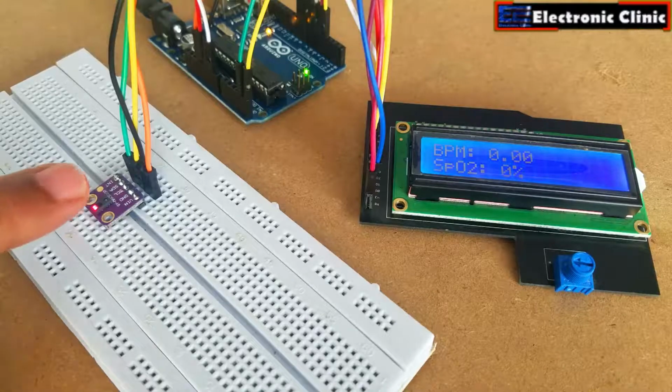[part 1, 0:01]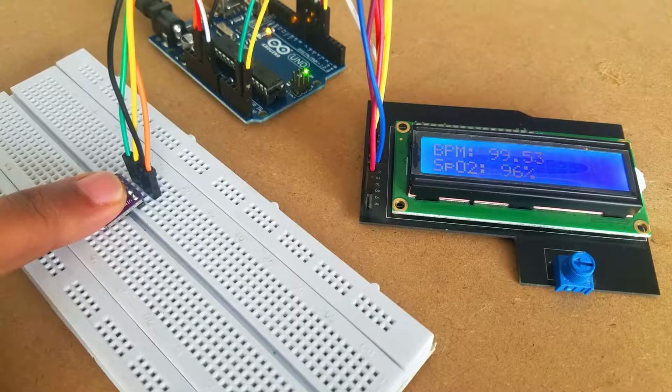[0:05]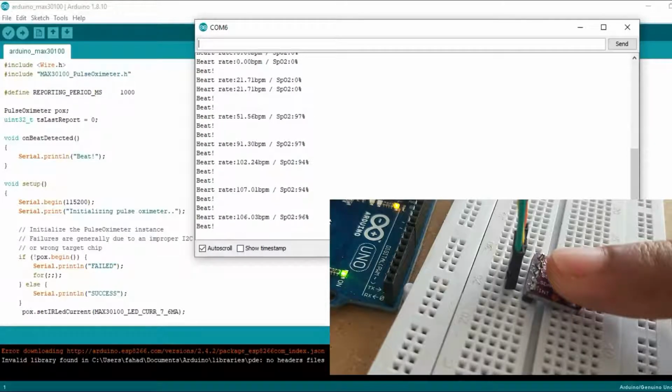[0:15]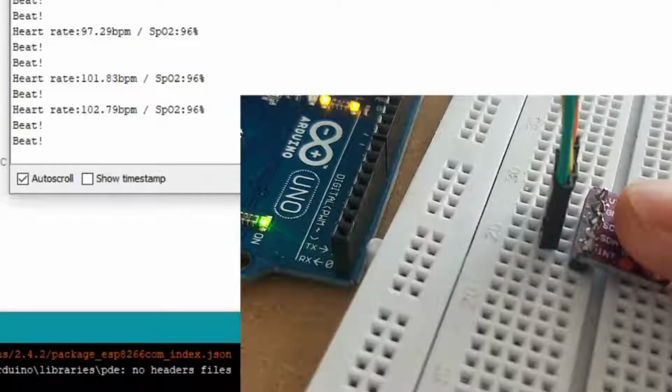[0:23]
In this tutorial, you will learn how to use the MAX30100 Pulse Oximeter with Arduino and display the heart rate and blood oxygen on the 16x2 LCD. The heart rate, or pulse rate, or heartbeat, is measured in BPM, which is also known as beats per minute, while the blood oxygen concentration is measured in percentage.
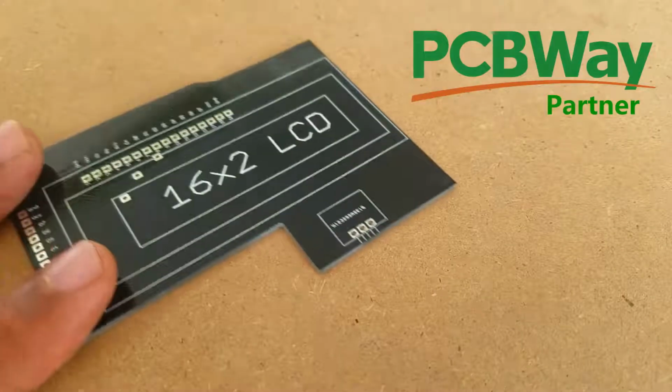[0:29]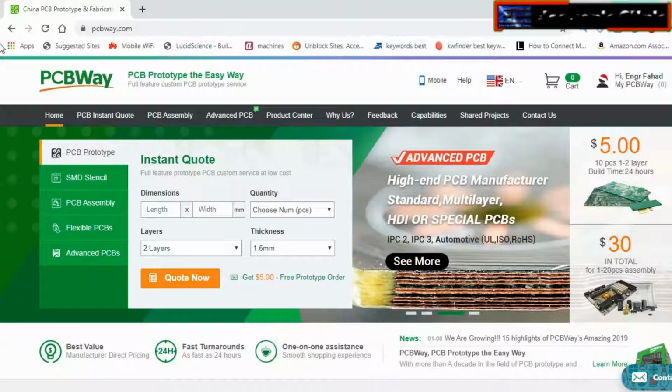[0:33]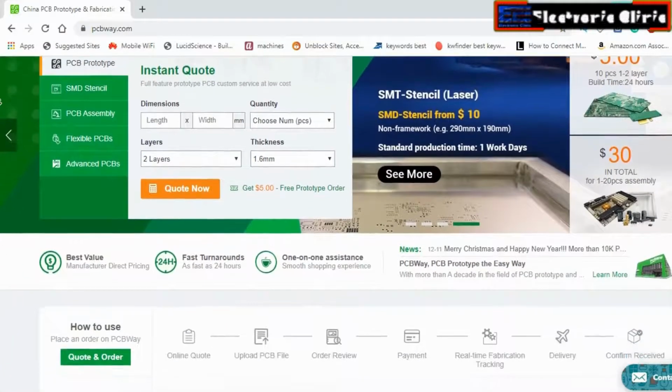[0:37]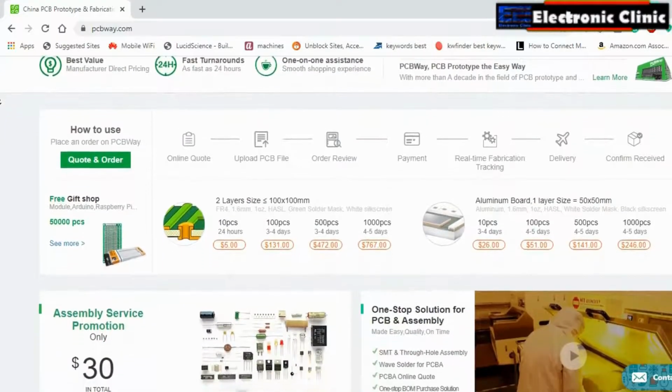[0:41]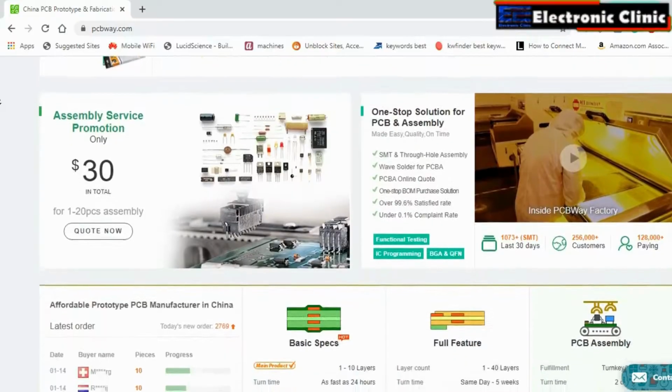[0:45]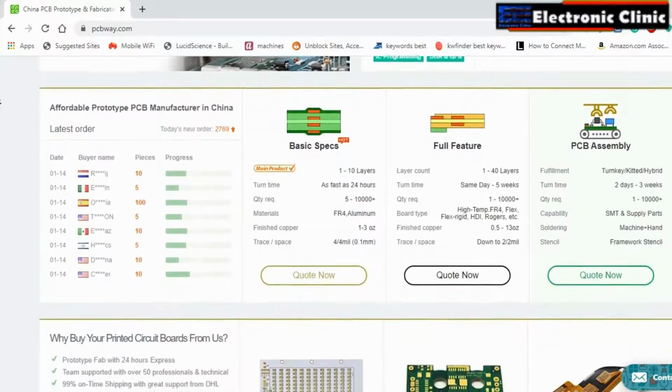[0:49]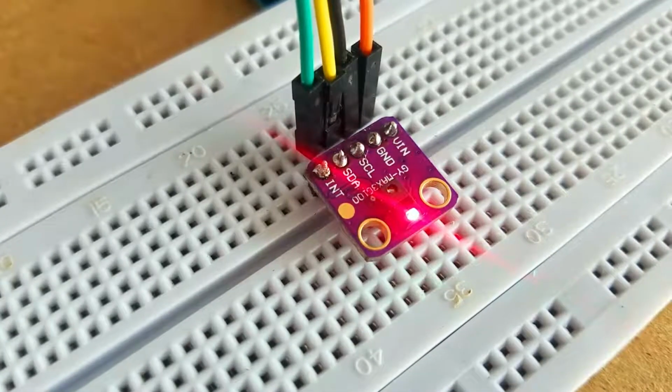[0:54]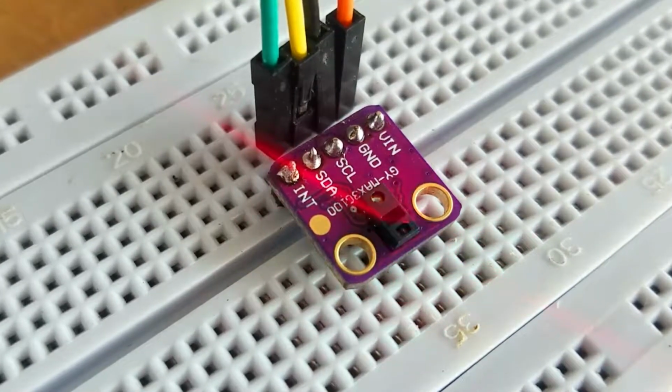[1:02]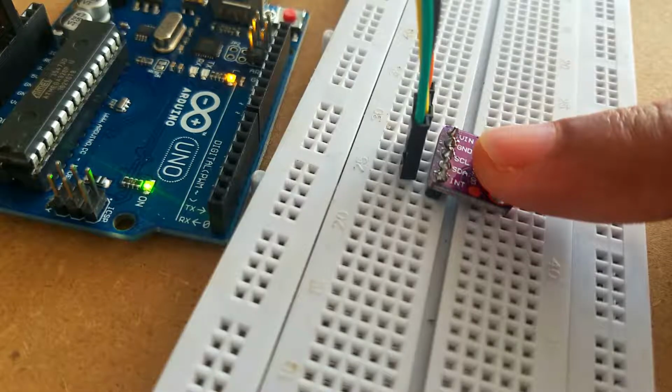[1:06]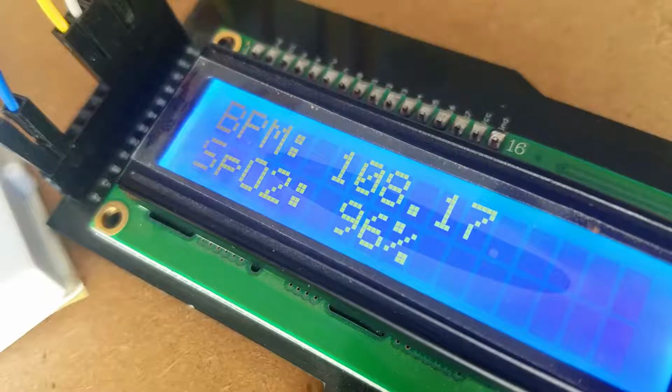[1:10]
So basically, the MAX30100 sensor is a pulse oximetry and heart rate monitor, which is used to check the health of a person with any condition that affects blood oxygen levels, such as heart attack, heart failure, lung cancer, asthma, etc.
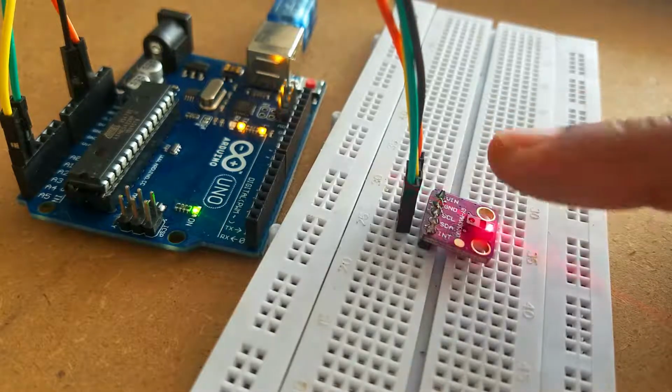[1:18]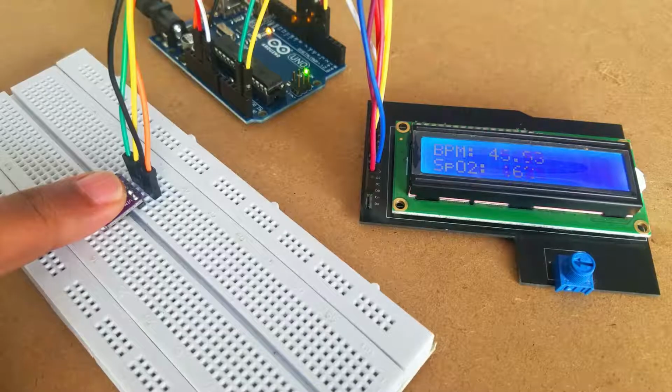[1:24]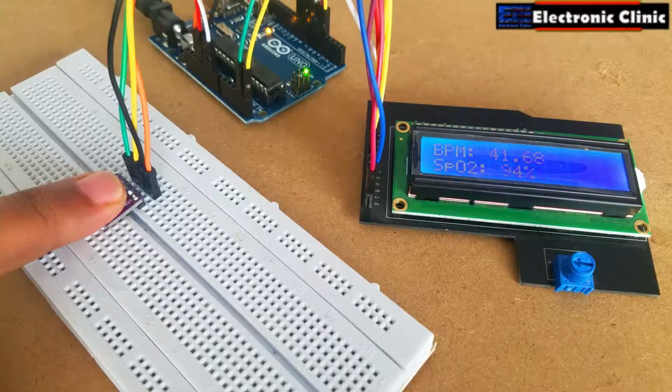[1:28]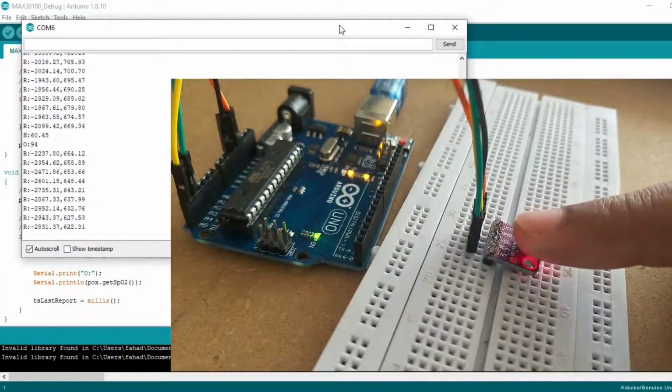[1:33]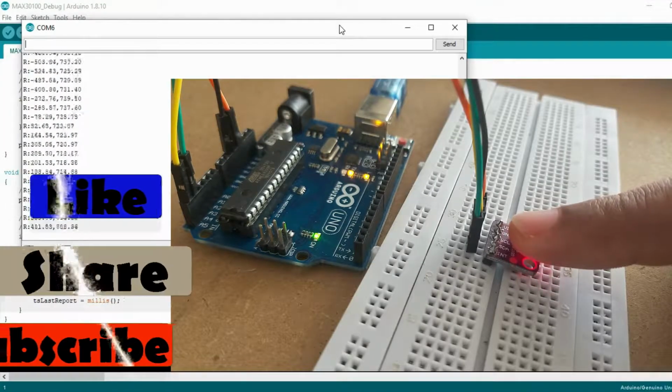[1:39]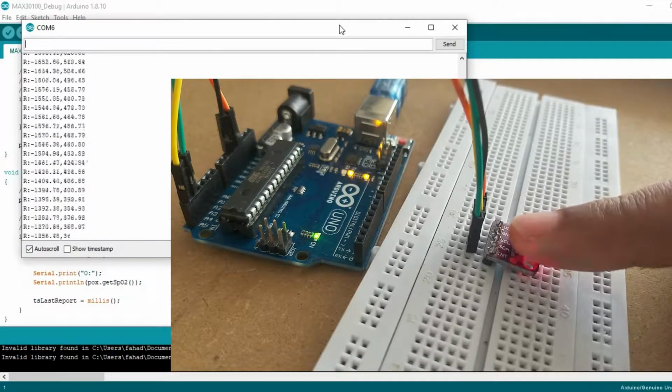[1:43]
No doubt the MAX30100 pulse oximeter is an amazing sensor. Still, it has some disadvantages. It may generate incorrect readings if the finger is not properly placed. The ambient light falling on the sensor can affect the final reading. While using the MAX30100 oximeter, make sure your finger is not moving, because it can result in an incorrect reading.
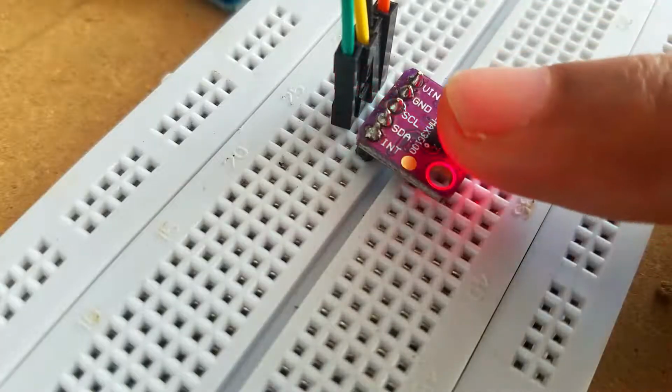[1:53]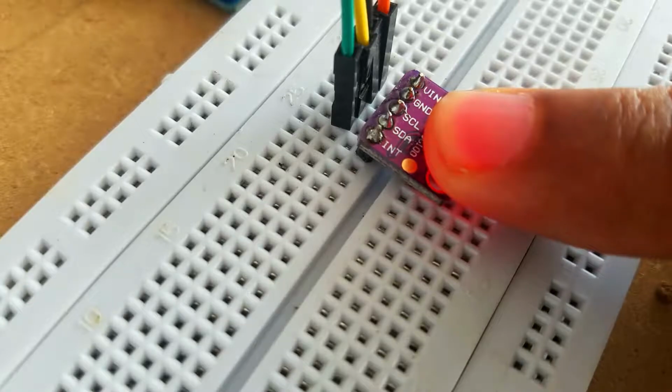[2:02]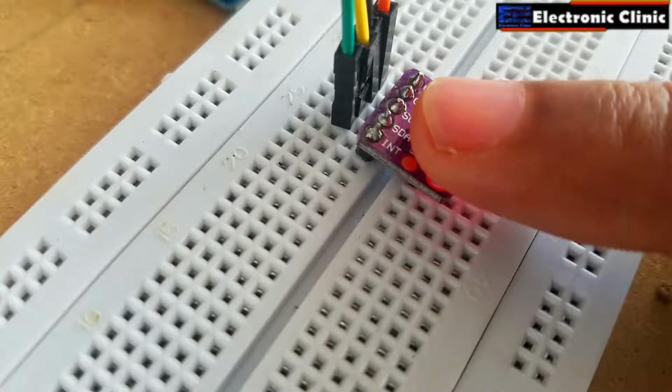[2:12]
One more thing that you really need to take care of while using the MAX30100 sensor is that you should never press the sensor too hard, as this affects the blood flow and as a result you will get incorrect readings. Try to place your finger softly and make sure your finger does not move. This way you can get the most accurate reading.
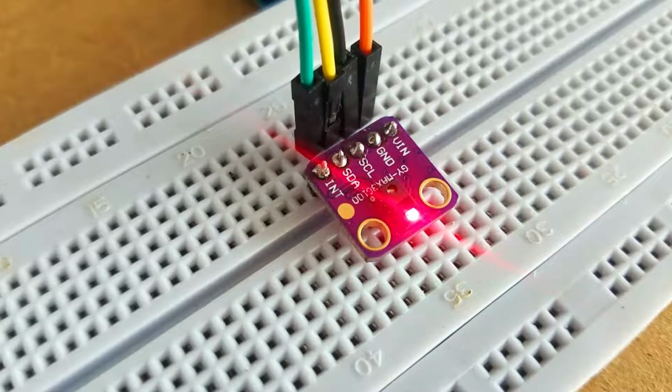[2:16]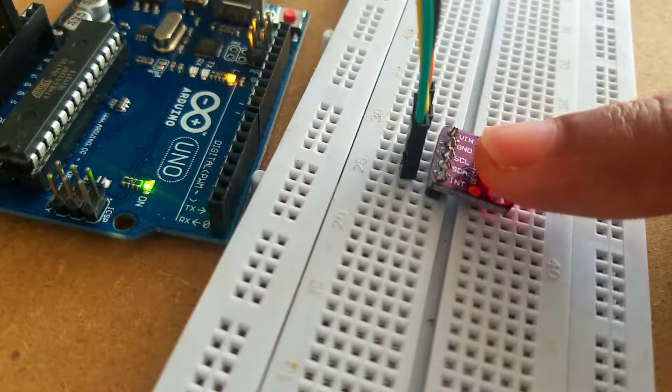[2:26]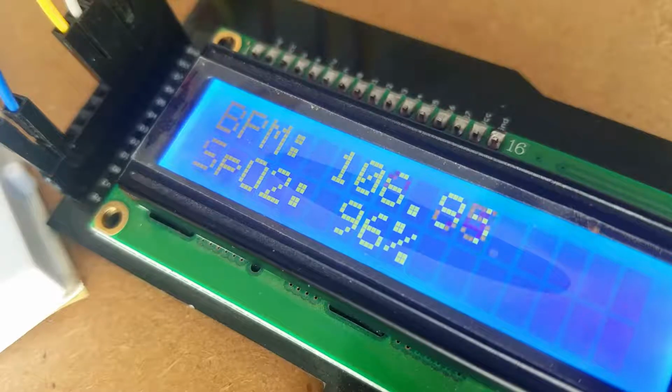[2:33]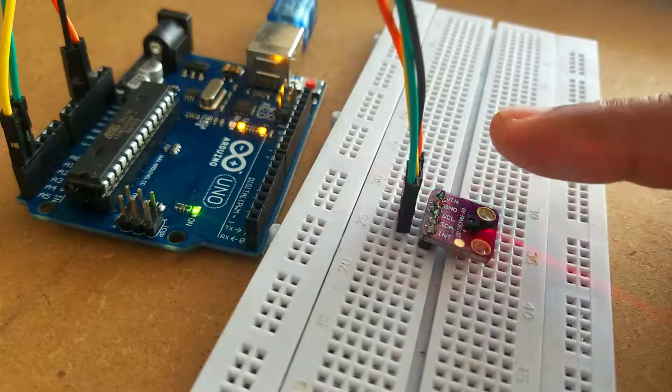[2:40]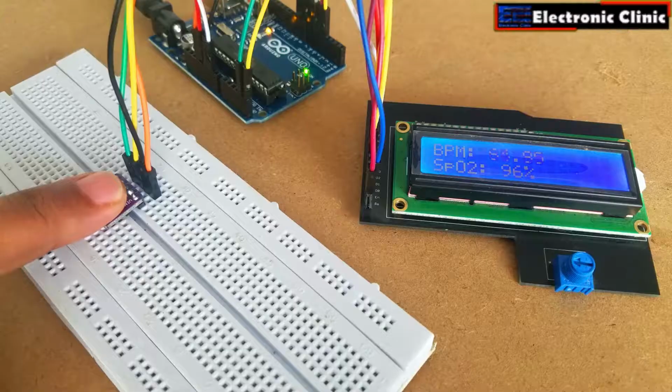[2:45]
This is my first getting started tutorial on the MAX30100 pulse oximeter, which covers the extreme basics, including number 1, MAX30100 pulse oximeter technical specification. Number 2, MAX30100 sensor pinout. Number 3, interfacing MAX30100 pulse oximeter sensor with Arduino. Number 4, programming. And finally, number 5, testing. Without any further delay, let's get started.
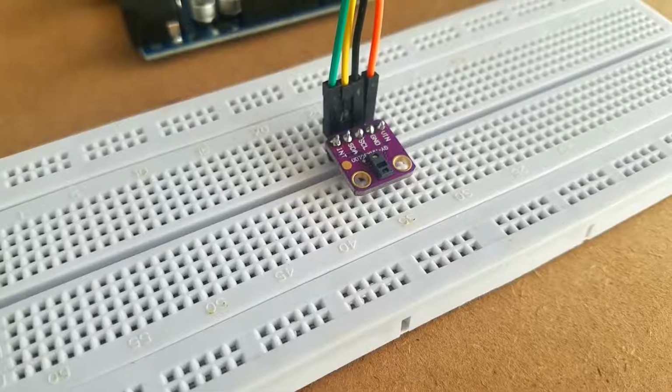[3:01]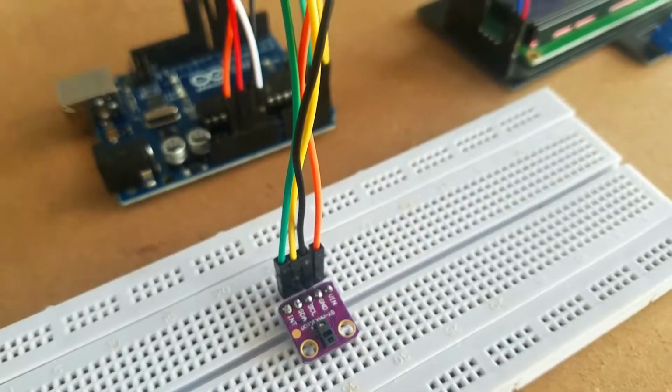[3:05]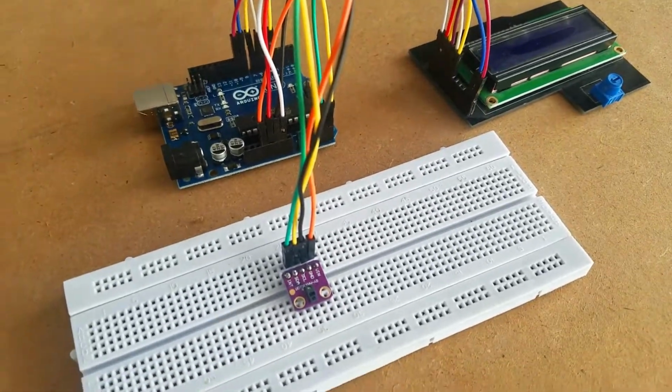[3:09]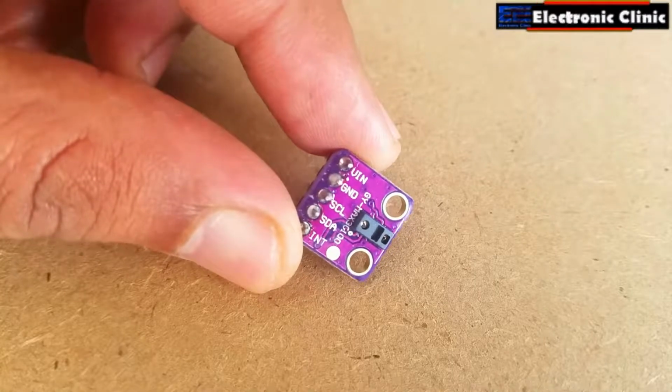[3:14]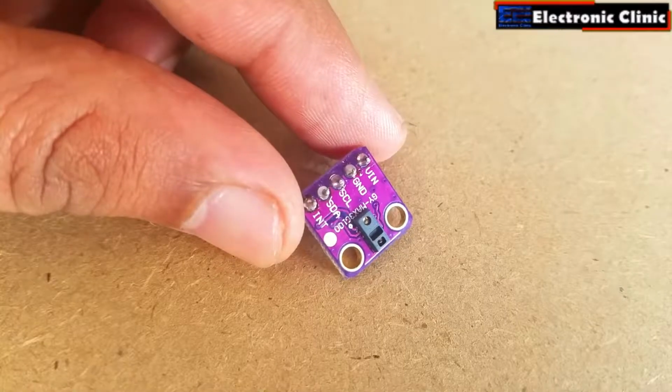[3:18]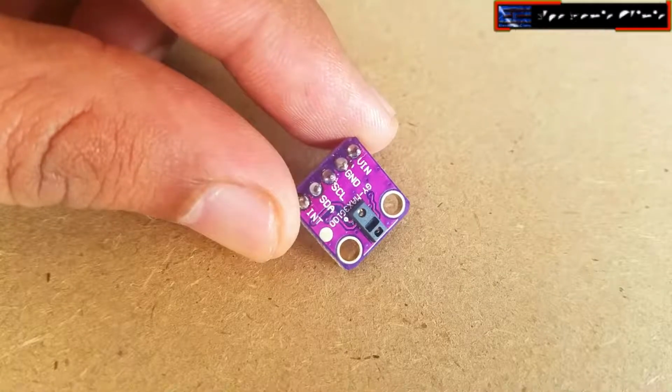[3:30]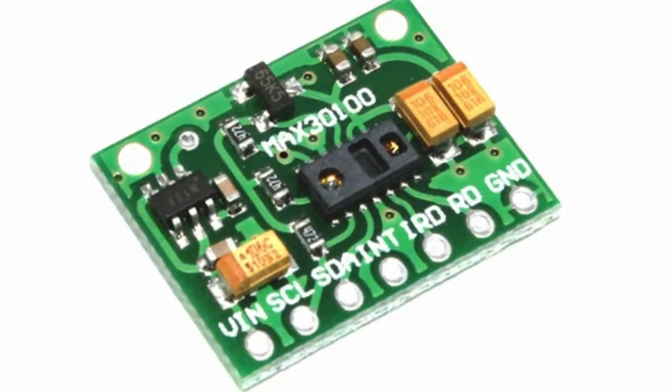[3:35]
The MAX30100 is an integrated pulse oximetry and heart rate monitor sensor solution. It combines two LEDs, a photodetector, optimized optics, and low noise analog signal processing to detect pulse oximetry and heart rate signals. There is another type of the MAX30100 pulse oximeter, as you can see on the screen.
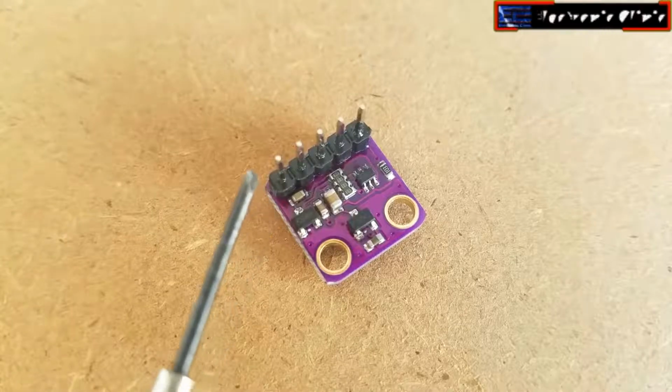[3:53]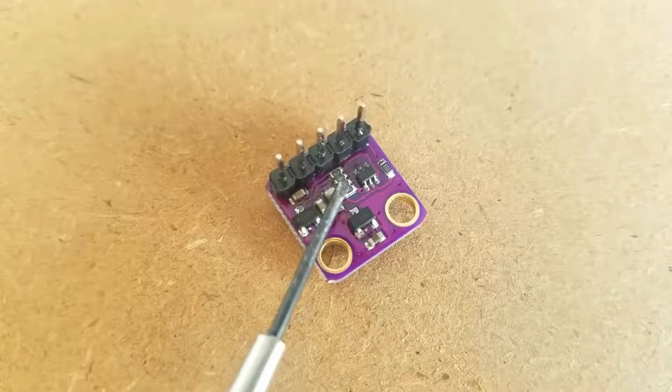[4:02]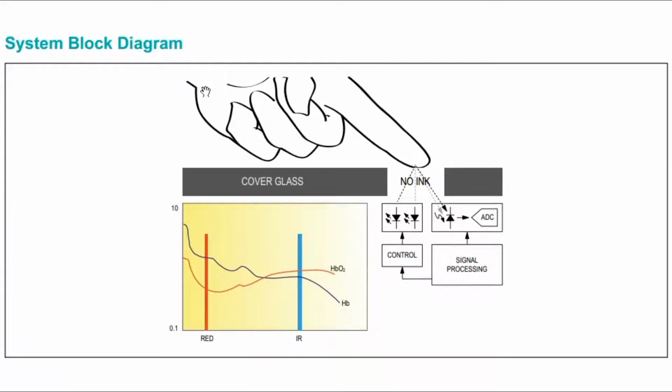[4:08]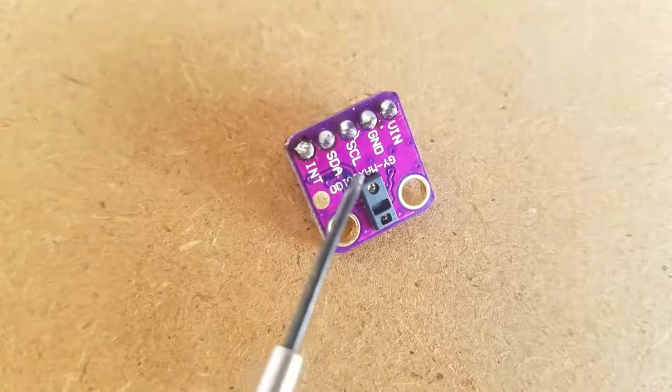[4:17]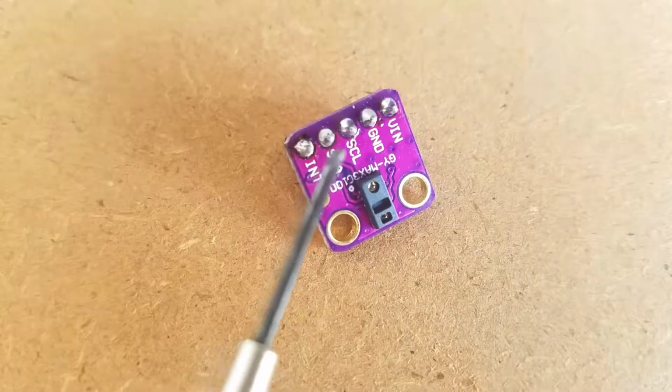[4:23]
This type of the oximeter has the sensors and electronic components all on the same side. Moreover, there are many complaints about this type of the sensor. I recommend you purchase the one I'm using in this video, because while using this sensor, you don't need to remove the resistors or solder any extra wires. As per the system block diagram, which is available in the datasheet, it clearly shows that there should be a small distance between the sensor and finger. The MAX30100 operates from 1.8 volt and 3.3 volt power supplies.
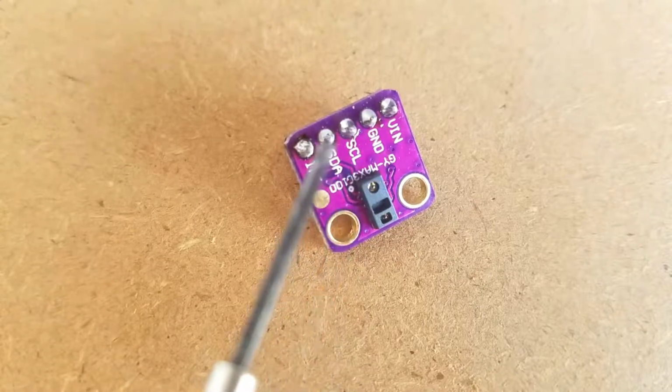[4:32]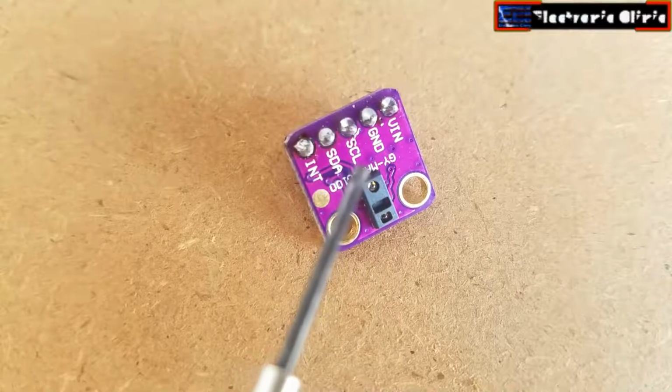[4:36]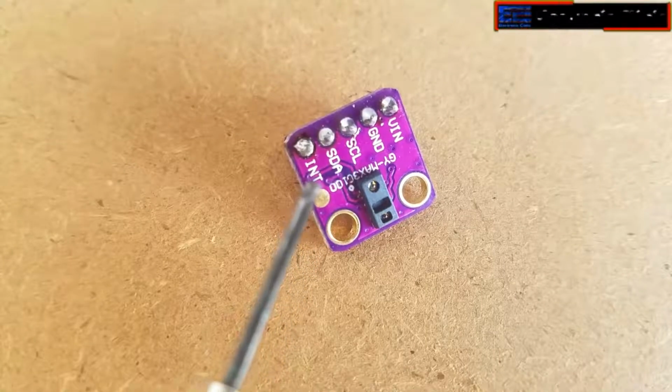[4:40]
As you can see clearly, the MAX30100 pulse oximeter has a total of 5 male headers, which are clearly labeled as VIN, ground, SCL, SDA and INT. This is an I2C supported sensor and communicates with the Arduino board through the I2C communication bus.
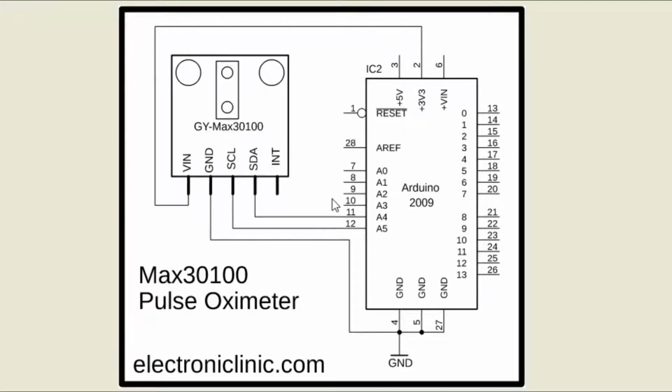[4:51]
First, let's start with a very basic circuit diagram. As you can see, the VIN and ground pins of the MAX30100 sensor are connected with the Arduino's 3.3 volt and ground pins. The SCL pin is connected with the analog pin A5. The SDA pin is connected with the analog pin A4, while the INT pin is not connected.
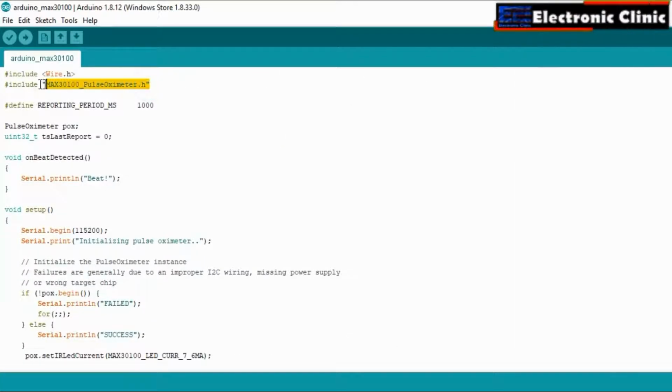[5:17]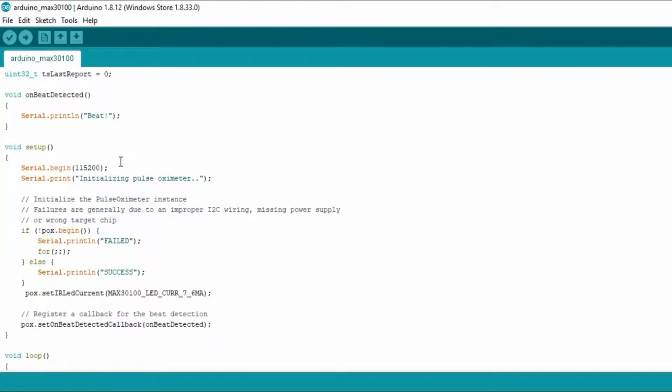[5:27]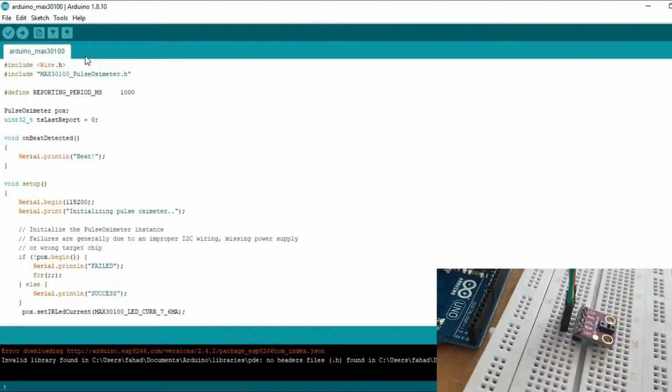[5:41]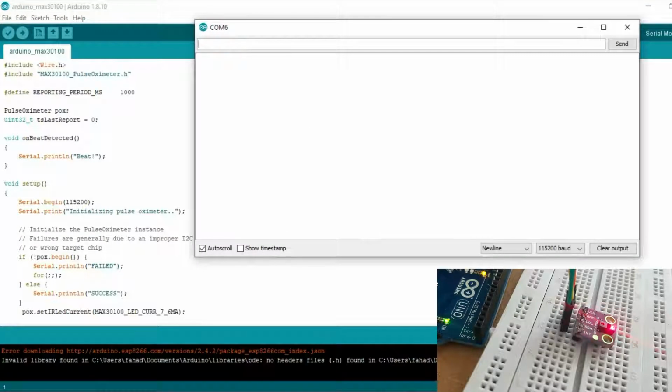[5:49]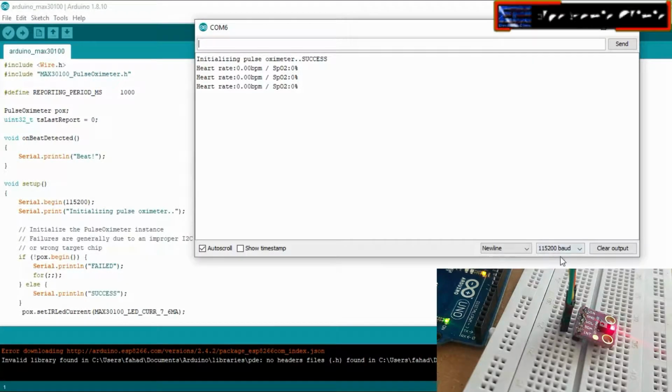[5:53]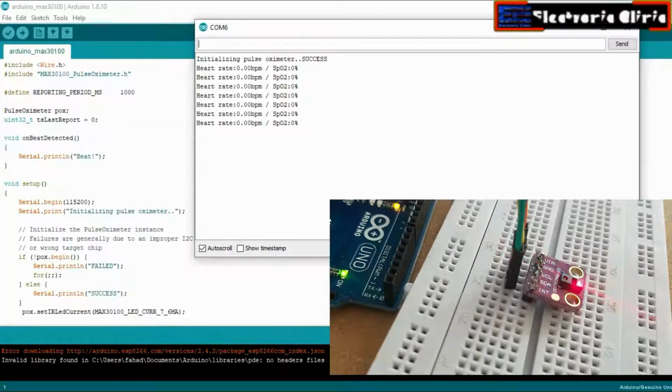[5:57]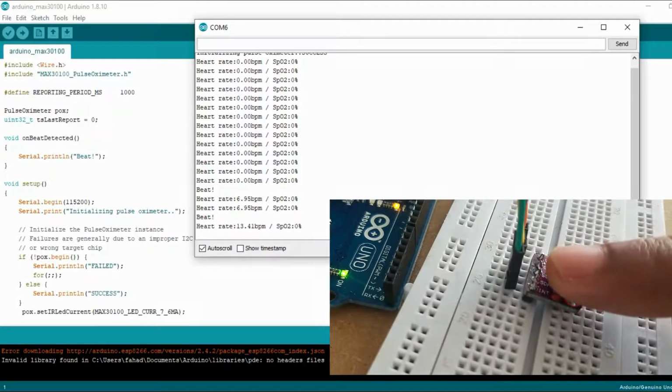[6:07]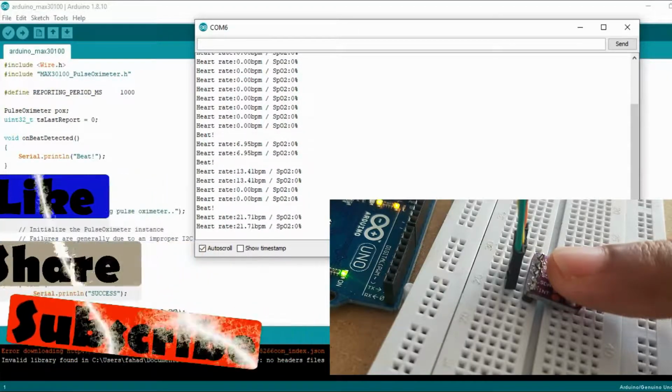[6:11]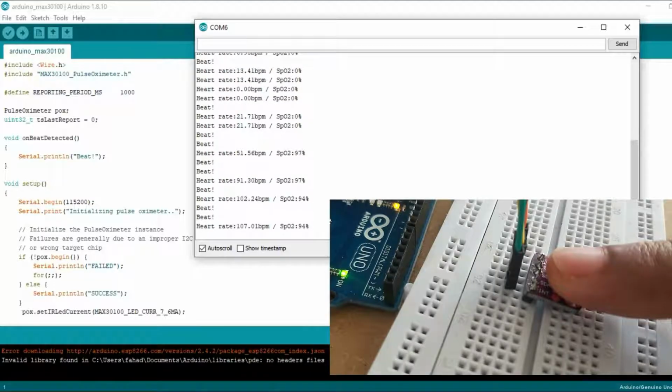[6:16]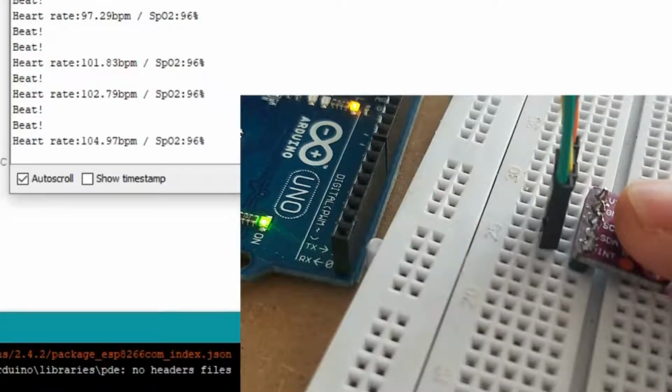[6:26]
This is a simple program which sends the BPM, beats per minute, and blood oxygen values to the serial monitor. I have already uploaded this program. Let's watch this basic project in action. While the Arduino board is connected with the laptop, open the serial monitor. Select the desired baud rate as specified in the programming. As you can see, I can successfully read the BPM and blood oxygen value percentage.
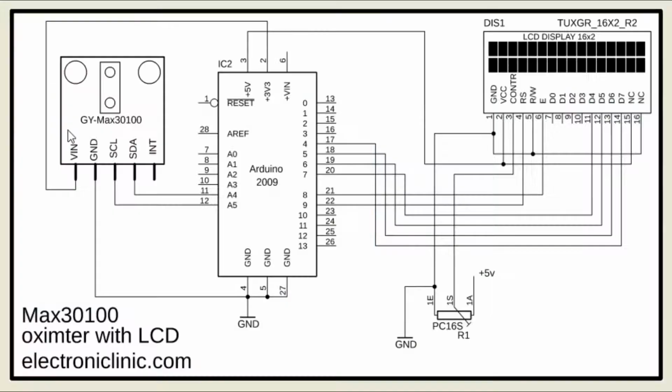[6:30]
Now let's print these values on the LCD. This is the modified circuit diagram. The MAX30100 pulse oximeter sensor connection with the Arduino remained the same. This time I added a 16x2 LCD.
As you can see, pin number 1 and pin number 16 are connected with the Arduino's ground. Pin number 2 and pin number 15 are connected with the Arduino's 5 volts. Pin number 3 is the contrast pin and is connected with the middle leg of the potentiometer. This is used for the LCD contrast adjustment.
The RS pin of the LCD is connected with the Arduino's pin number 9. The read-write pin is connected with the ground. The enable pin is connected with the Arduino's pin number 8. Pins D4 to D7 of the 16x2 LCD are connected with the Arduino's pins 7, 6, 5 and 4.
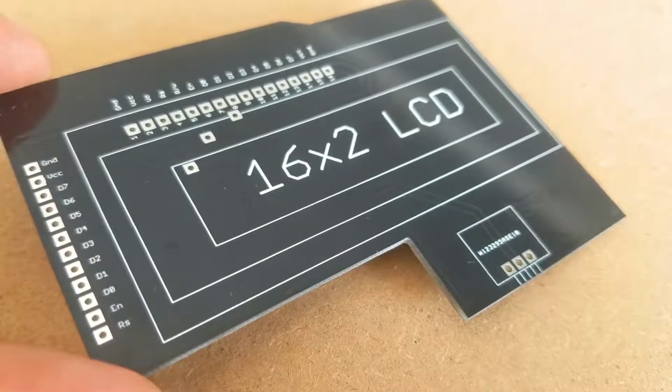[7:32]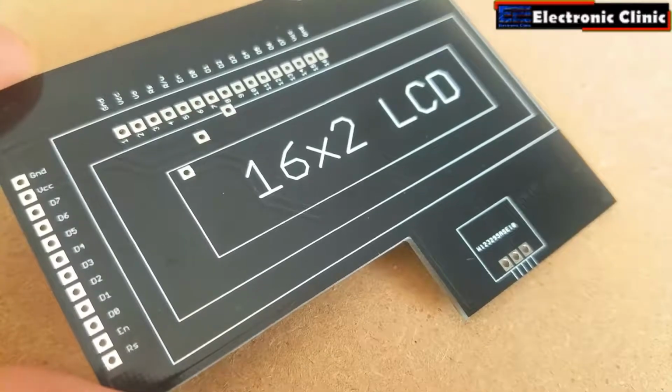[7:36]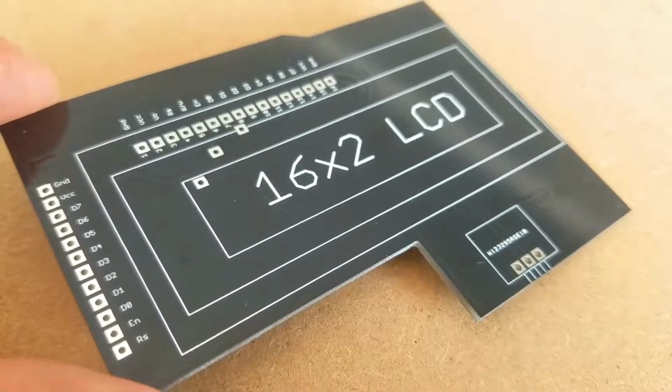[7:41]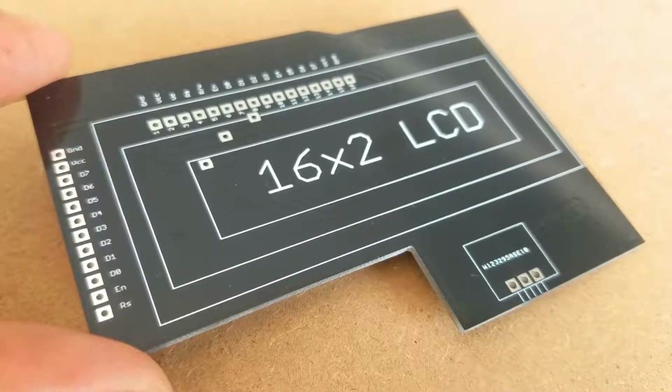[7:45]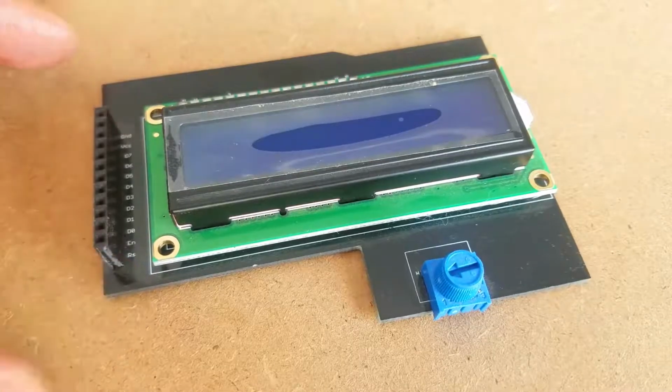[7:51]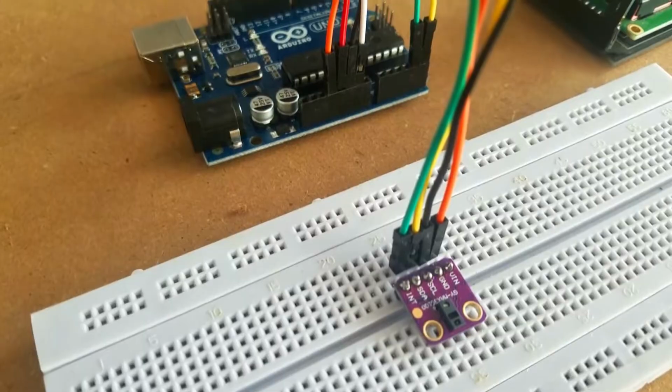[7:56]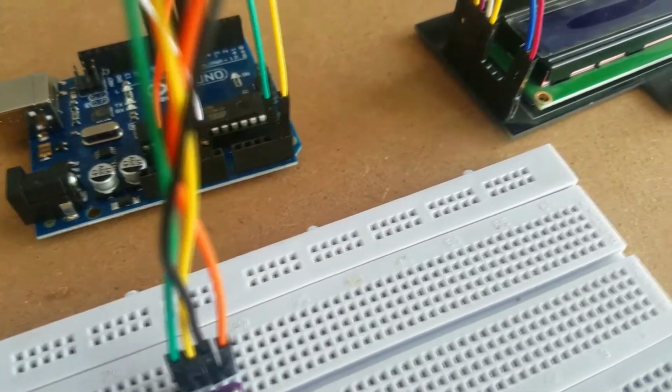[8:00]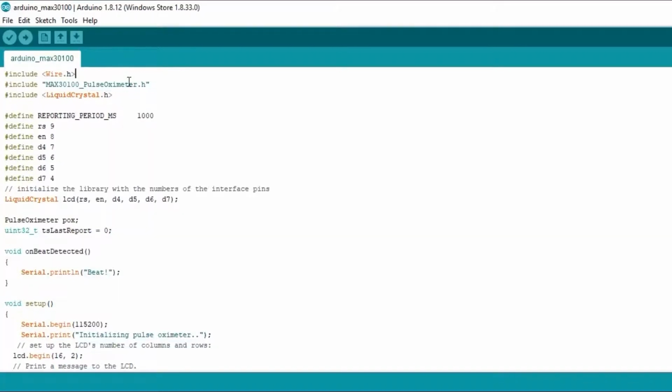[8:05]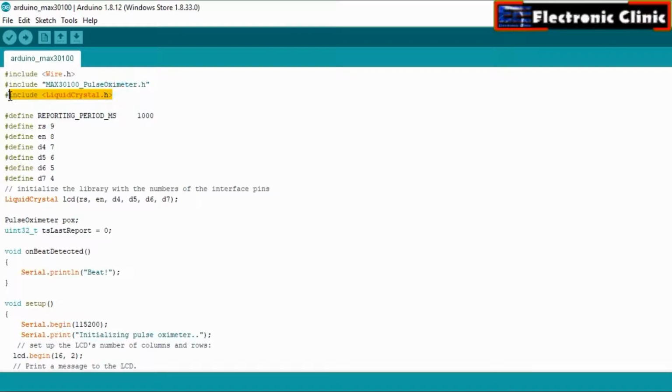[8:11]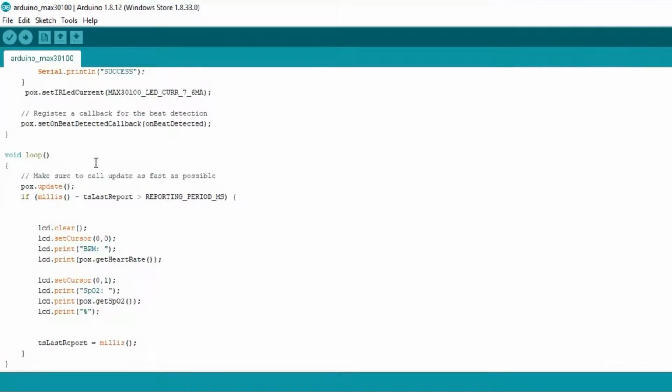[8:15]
I interfaced the LCD and MAX30100 pulse oximeter as per the circuit diagram already explained. Now let's have a look at the Arduino programming. This is the same exact program with a very little modification. I added the LiquidCrystal library and defined pins as per the circuit diagram. In the void loop function, I added instructions for displaying the oxygen percentage and BPM values on the LCD.
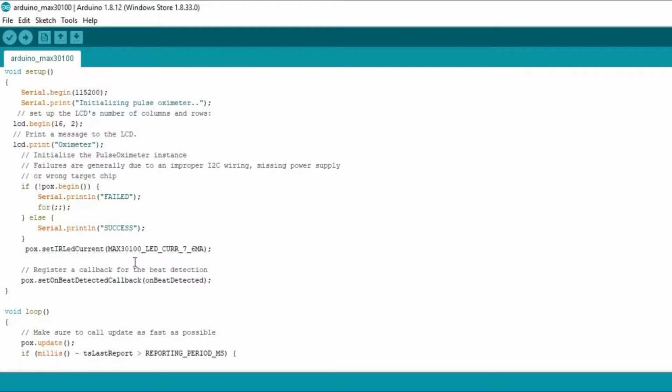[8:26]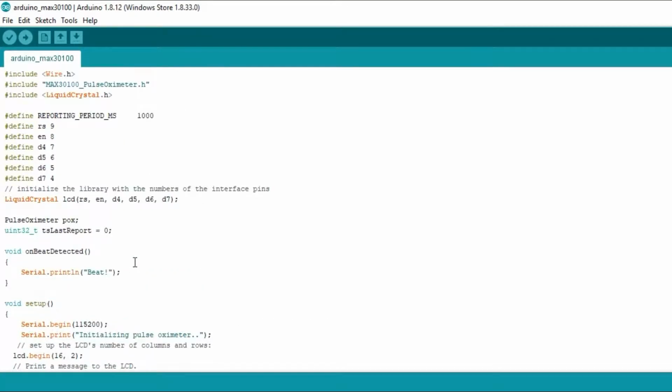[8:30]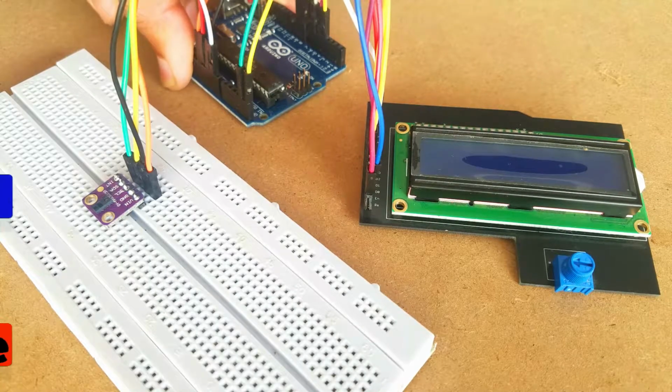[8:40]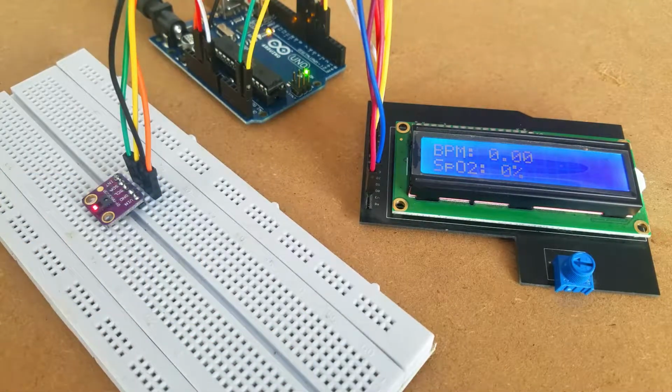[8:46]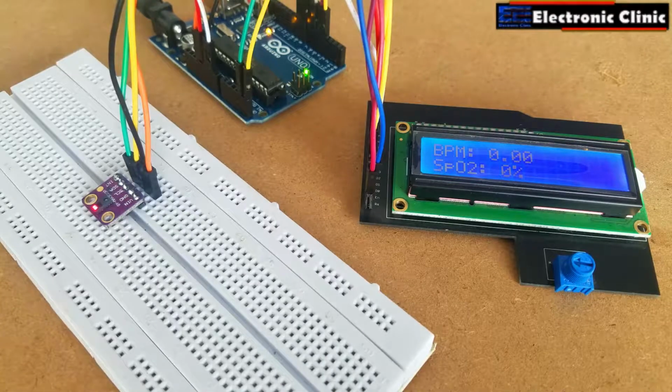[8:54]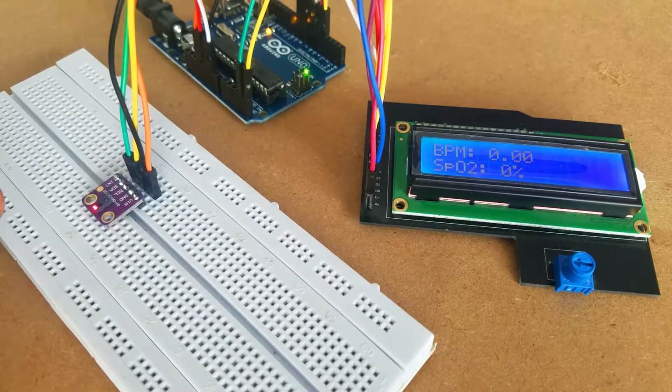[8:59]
I have already uploaded this program. Let's watch this project in action.
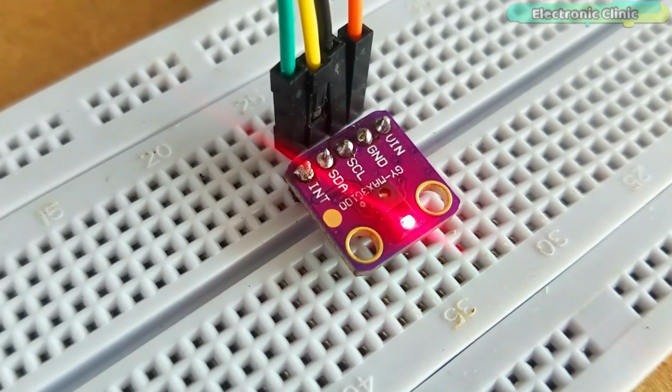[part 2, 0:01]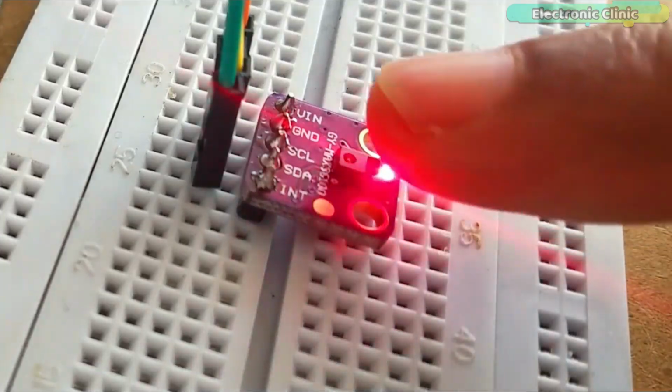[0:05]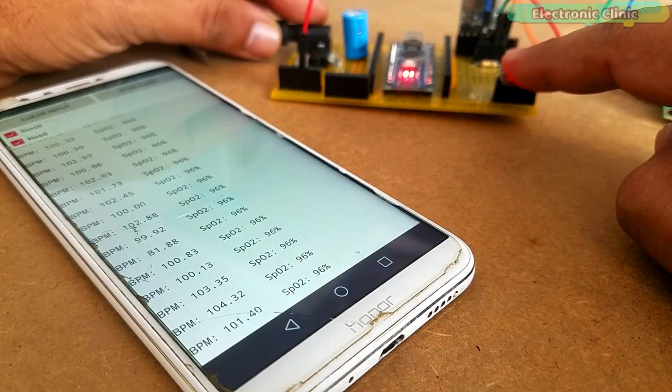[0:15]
In this tutorial, you will learn how to use the Max30100 Pulse Oximeter with Arduino Nano and display the heart rate and blood oxygen on a 16x2 I2C supported LCD module, and also send the blood oxygen and heart rate or pulse rate values to the Android application designed in Android Studio using wireless Bluetooth technology.
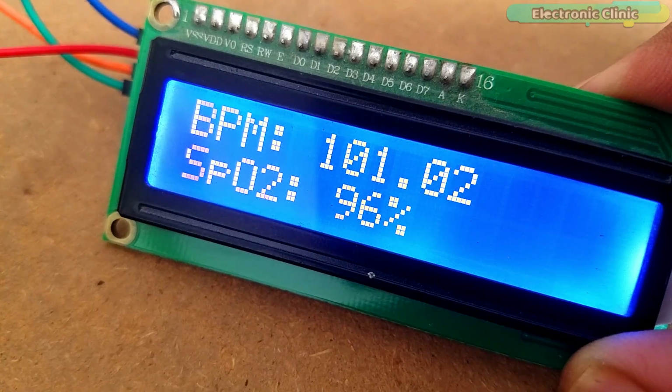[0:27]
The heart rate or pulse rate or heartbeat is measured in BPM, which is also known as beats per minute, while the blood oxygen concentration is measured in percentage.
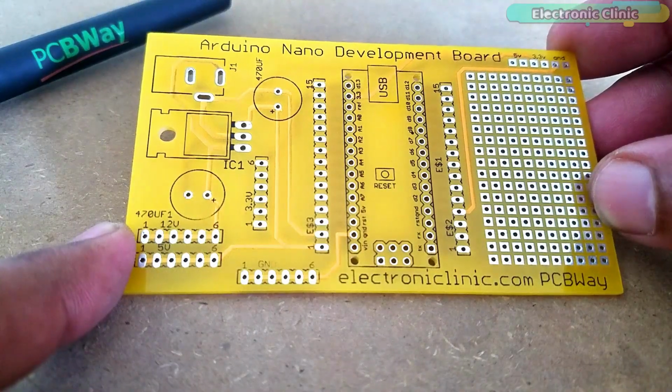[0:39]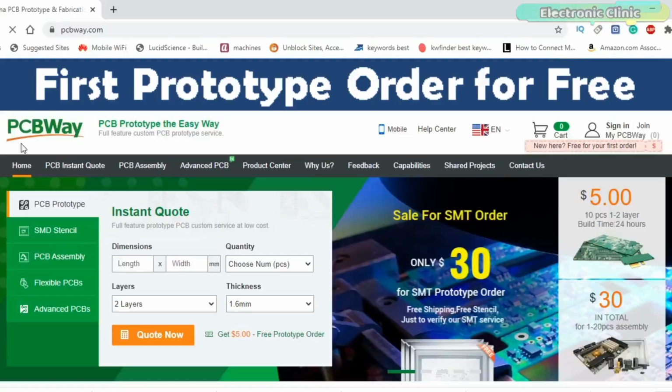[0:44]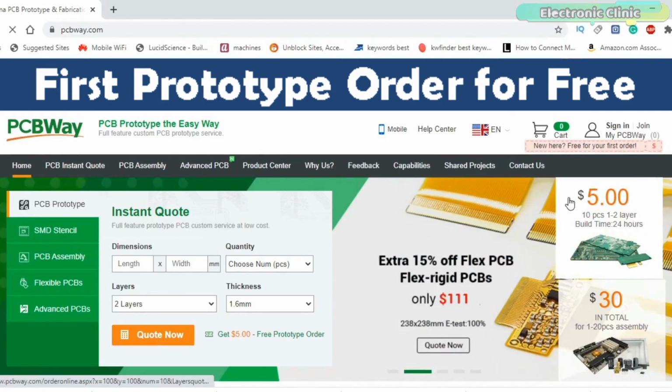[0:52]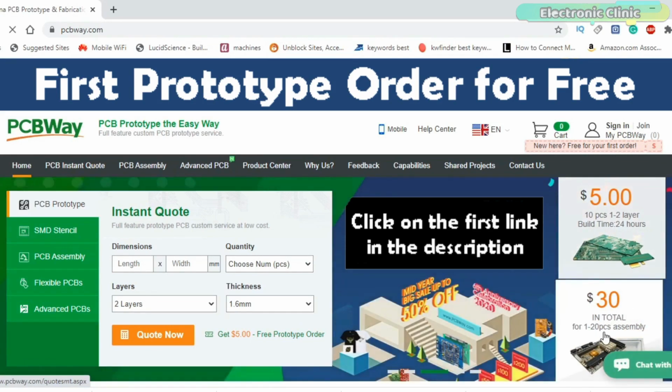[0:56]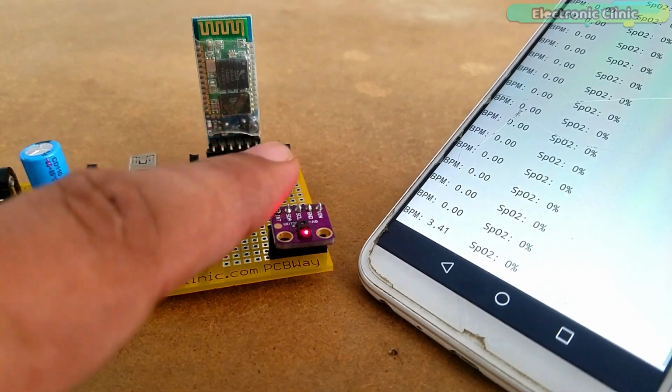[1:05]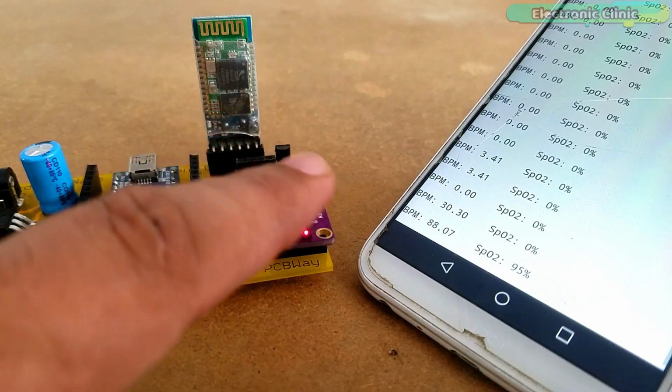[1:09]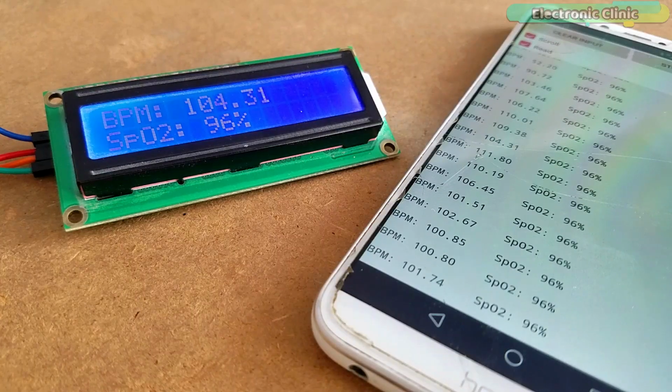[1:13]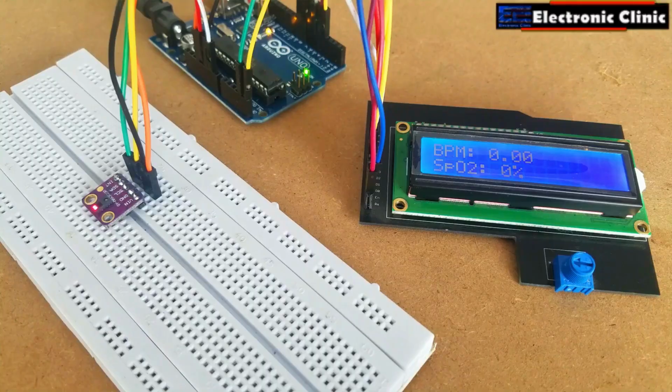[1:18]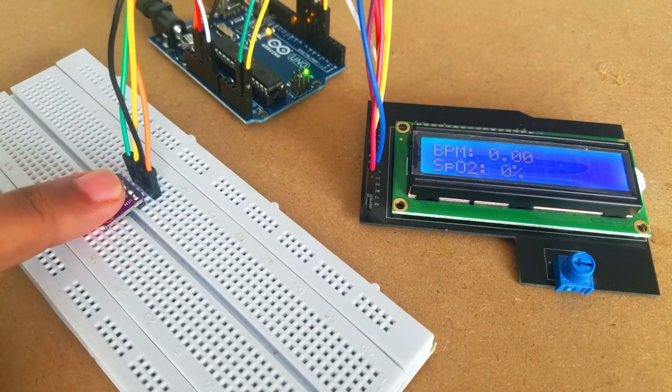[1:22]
You can also disconnect the LCD and only use the Android cell phone application for monitoring. You can use any of these two, or you can use both at the same time for monitoring the BPM and blood oxygen values. I have already explained the very basics in my first video on the Max30100 Pulse Oximeter.
In that tutorial, I interfaced the Max30100 Pulse Oximeter with Arduino Uno and displayed the blood oxygen and heart rate information on the 16x2 LCD module.
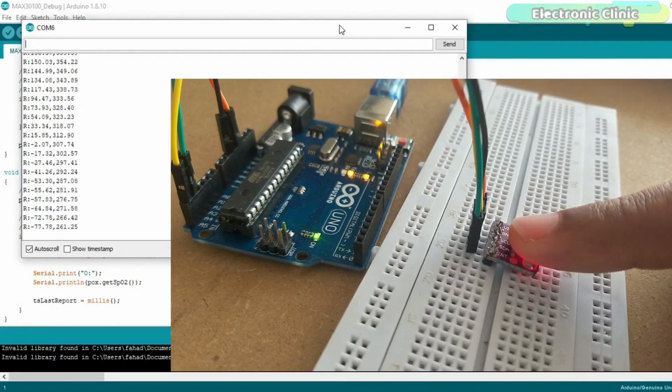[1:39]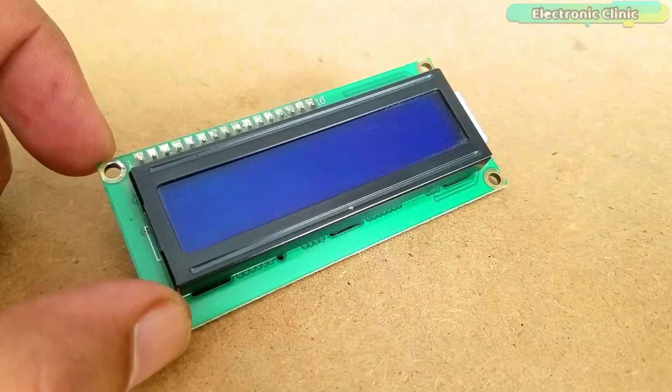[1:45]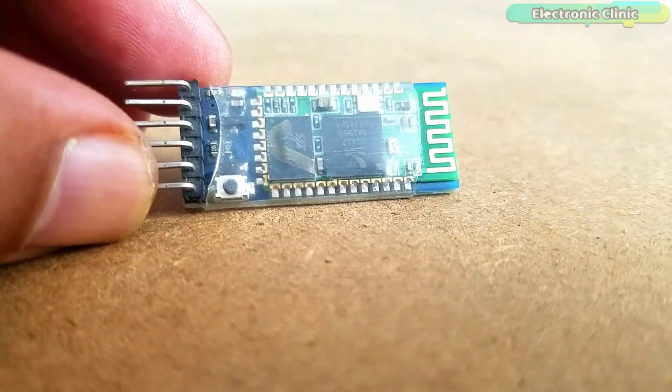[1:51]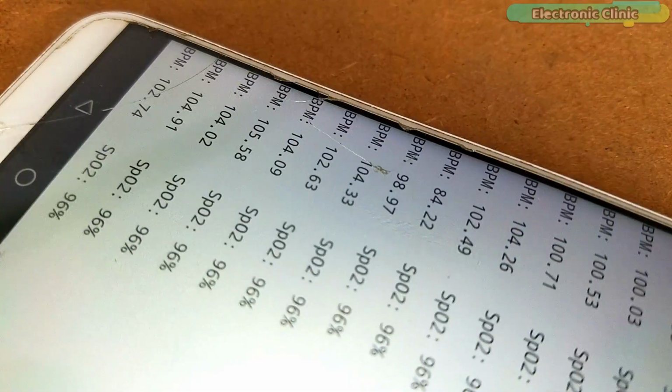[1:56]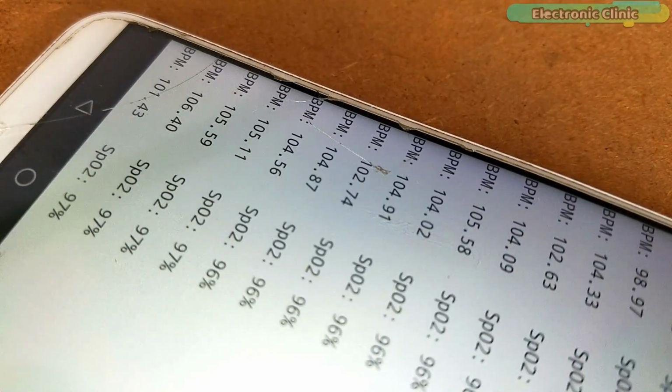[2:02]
To take this project to another level, reduce the wiring and make it more user-friendly, I decided to use the I2C 16x2 LCD display module and the HC05 or HC06 Bluetooth module to wirelessly monitor the blood oxygen and heart rate values using a Bluetooth supported Android cell phone application.
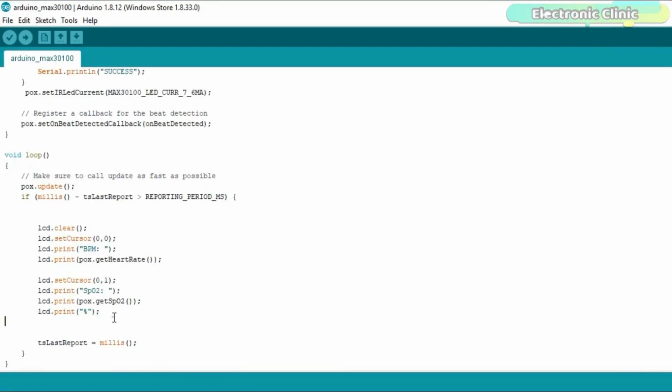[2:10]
I have tried my level best to keep everything simple by modifying the previous circuit diagram and Arduino code. So I highly recommend watching my previous video on the Max30100 Pulse Oximeter.
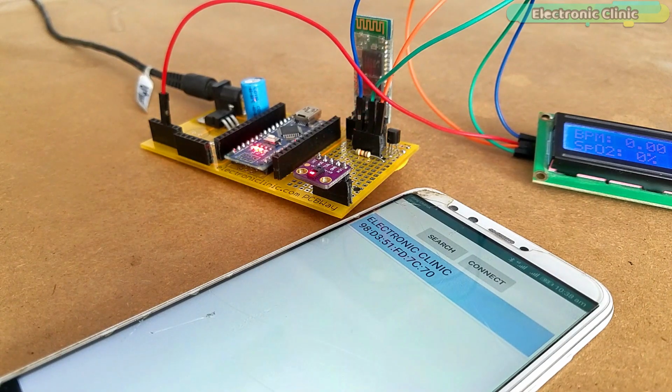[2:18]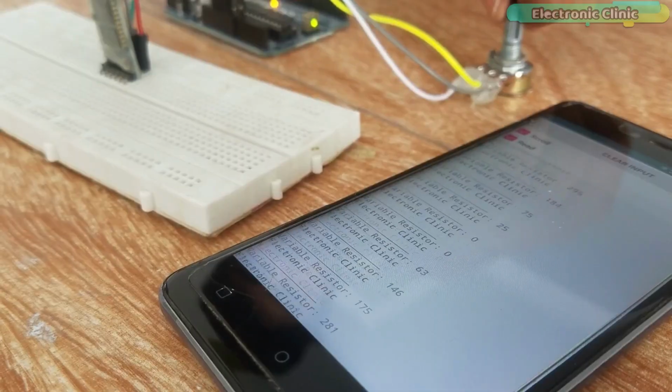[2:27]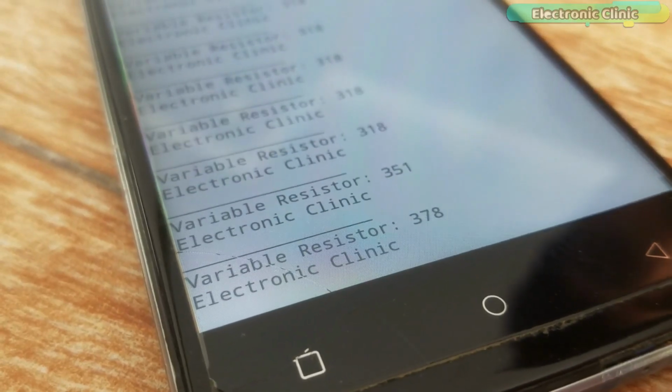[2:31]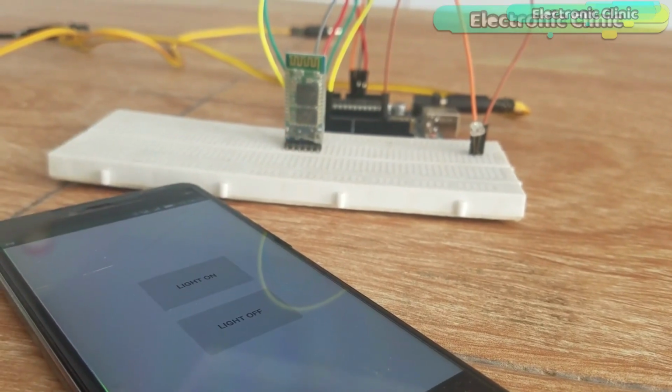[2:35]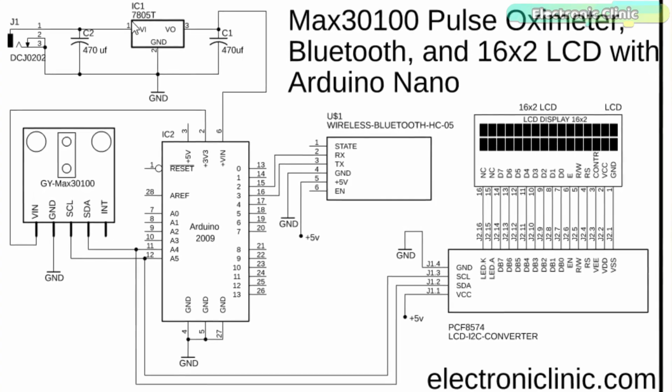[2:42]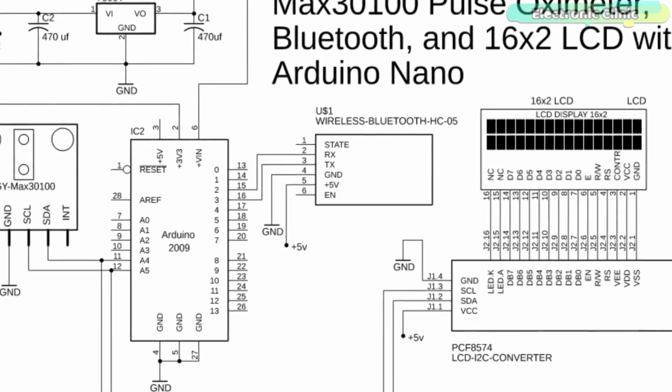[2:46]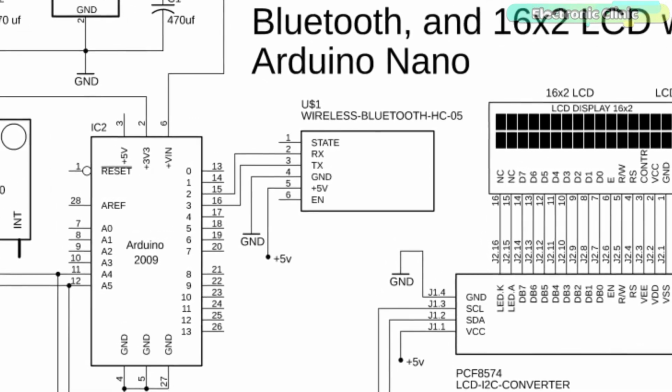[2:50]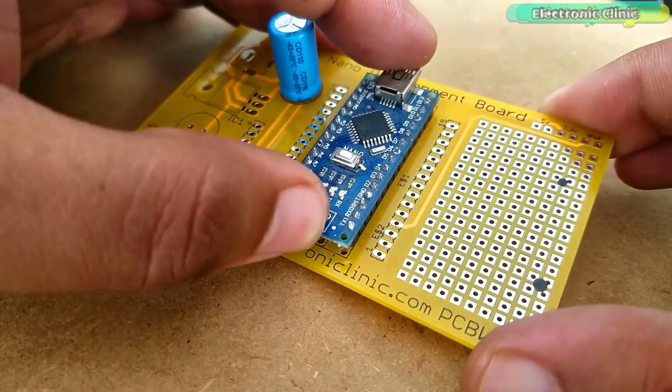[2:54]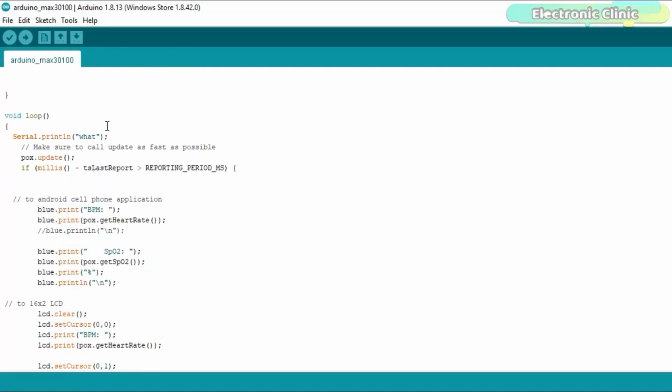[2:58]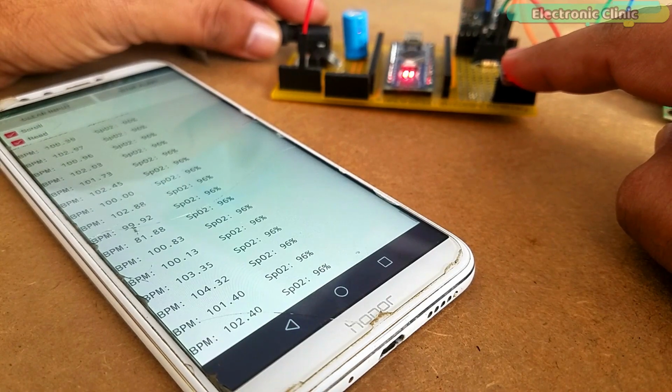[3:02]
In this tutorial, we will cover number 1, the modified circuit diagram using the Bluetooth and I2C supported 16x2 LCD module and Arduino Nano. Number 2, interfacing and soldering the components. Number 3, the modified Arduino code. And finally, number 4, testing. Without any further delay, let's get started.
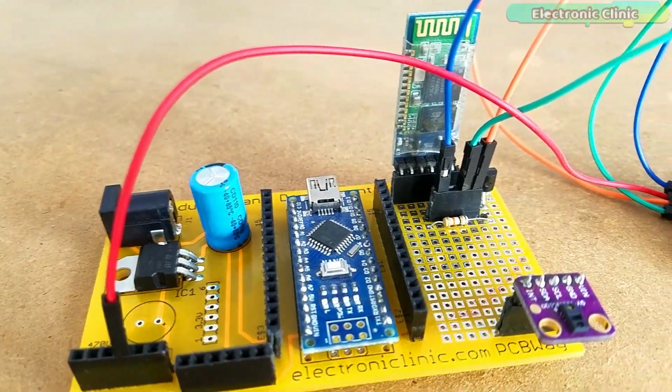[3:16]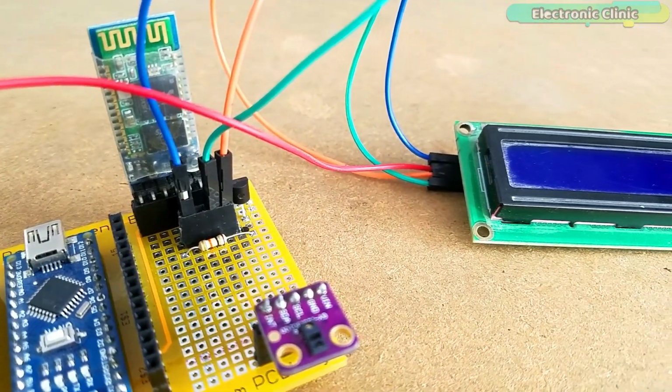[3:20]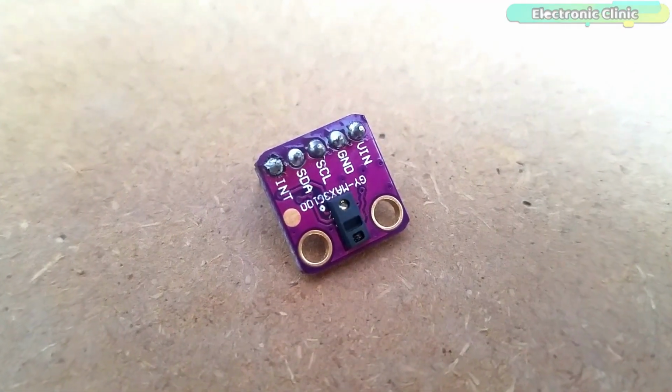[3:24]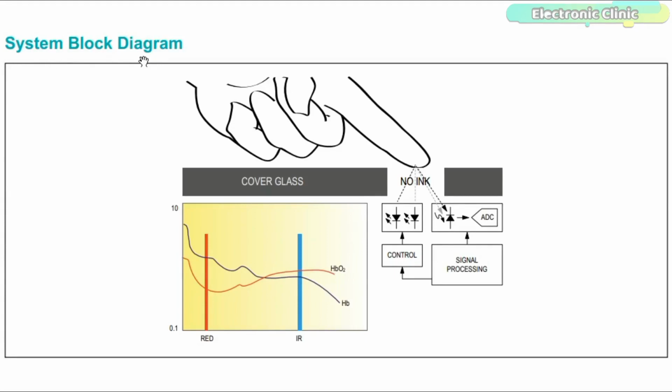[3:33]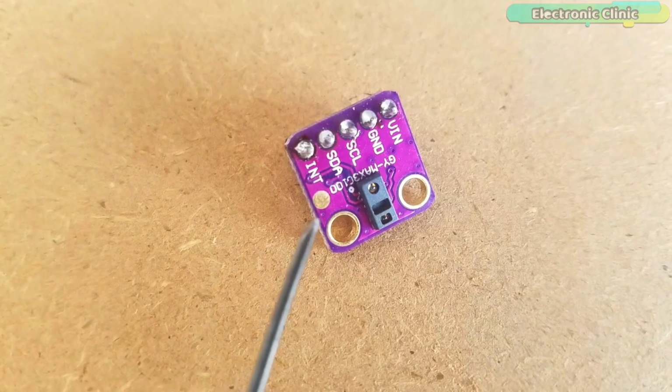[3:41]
This is the Max30100 Pulse Oximeter used for monitoring the blood oxygen and heart rate. As per the system block diagram which is available in the datasheet, it clearly shows that there should be a small distance between the sensor and finger. The Max30100 operates from 1.8 volt and 3.3 volt power supplies.
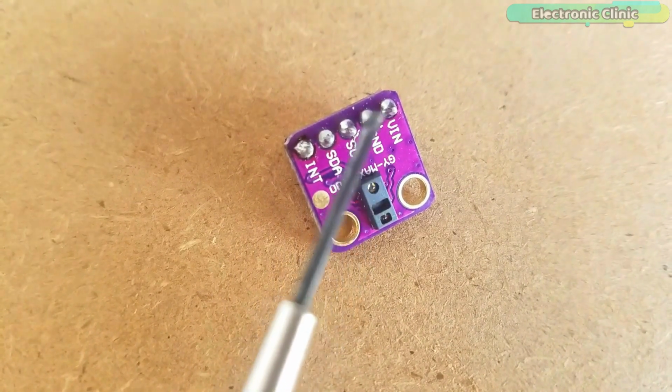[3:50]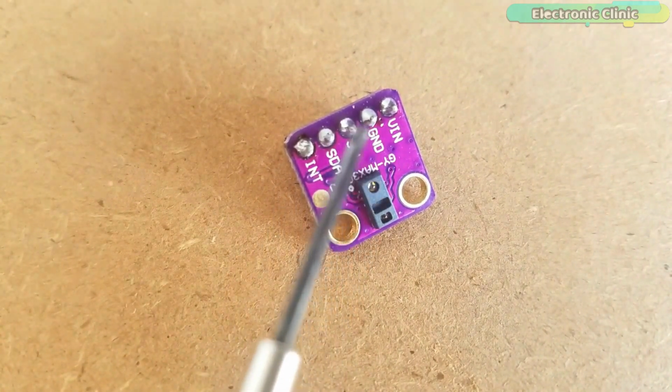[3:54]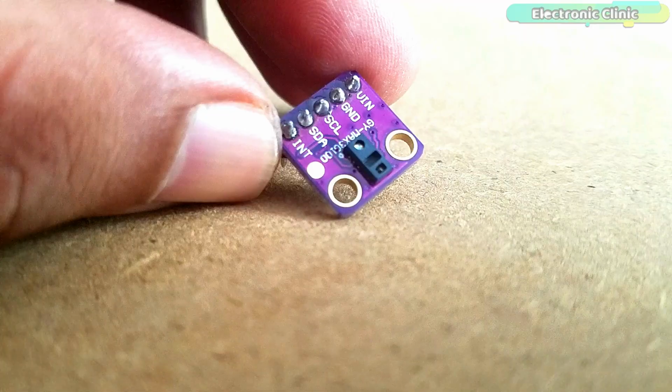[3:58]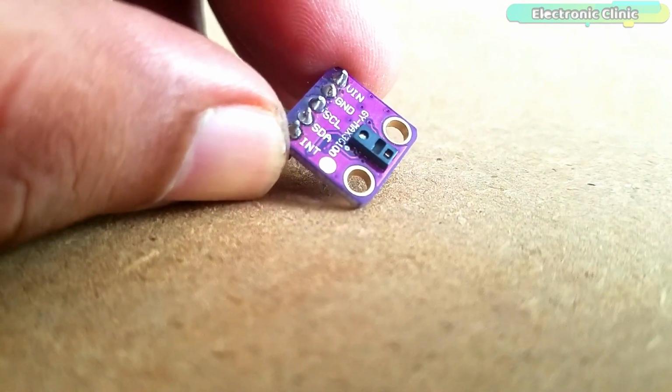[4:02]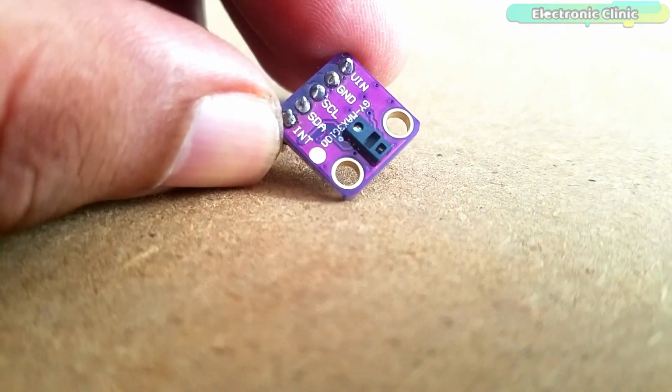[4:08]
As you can see clearly, the GY-Max30100 Pulse Oximeter has a total of 5 male headers, which are clearly labeled as VIN, ground, SCL, SDA and INT. This is an I2C supported sensor and communicates with the Arduino board through the I2C communication bus. If you want to know more about the Max30100 Pulse Oximeter sensor, then watch my first video.
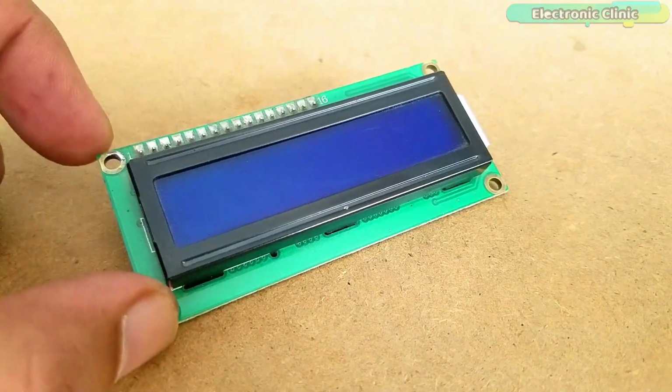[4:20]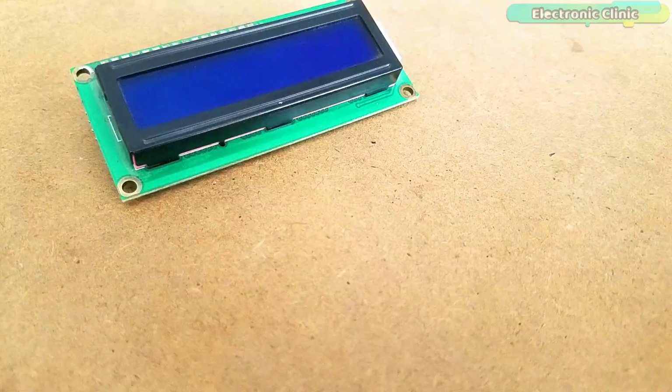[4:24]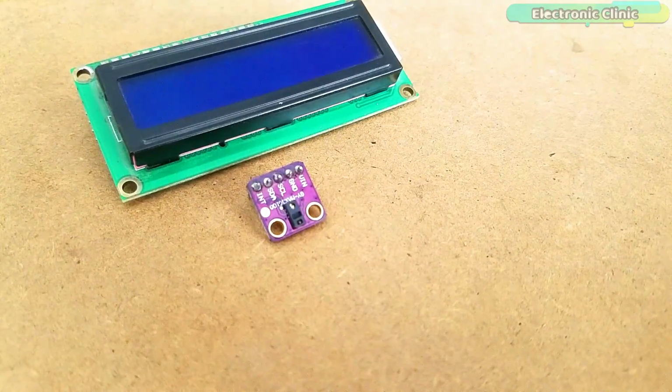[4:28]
This is an I2C supported 16x2 LCD display module. The Max30100 Pulse Oximeter also uses the I2C bus. So using only two pins, A4 and A5, we can communicate with both the modules.
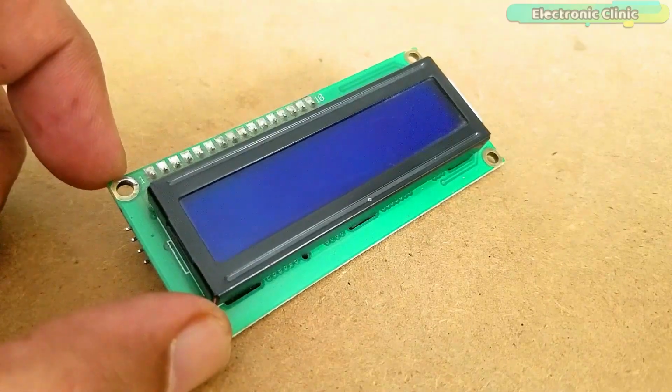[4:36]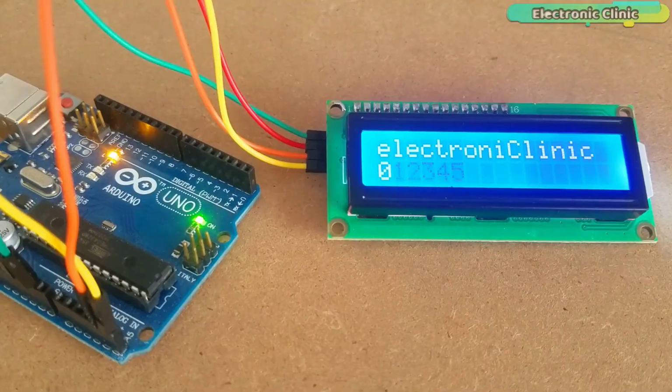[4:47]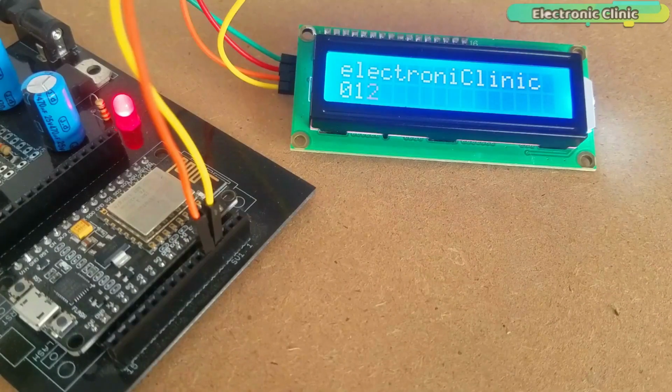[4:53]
If you want to know in detail about the I2C supported 16x2 LCD display module, like its libraries, fixing the basic issues, etc., then watch my video tutorial on how to use the I2C supported 16x2 LCD with Arduino and Node MCU ESP8266 WiFi module. I will provide a link in the description.
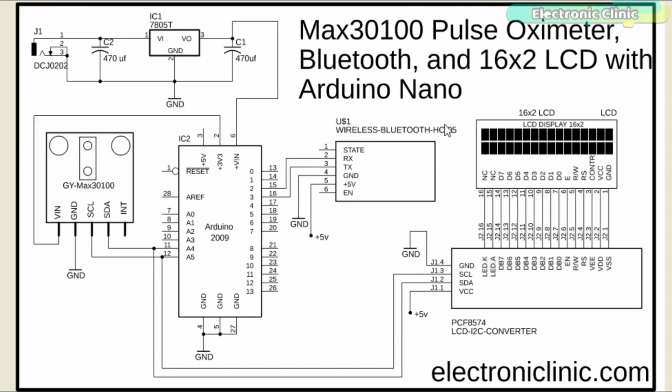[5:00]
This is the modified circuit diagram. The Arduino Nano is powered up using a 5-volt regulated power supply based on the LM7805 voltage regulator. J1 is the DC female power jack. This is where we connect a 12-volt adapter, battery or a solar panel. Make sure the power supply voltage does not exceed the input voltage limit of the LM7805 voltage regulator.
The regulated voltage is then connected with the VIN pin of the Arduino Nano. Don't forget to connect the ground of the power supply with the ground pin of the Arduino board. For the best performance, you can also add a heat sink with the 7805 voltage regulator. The Max30100 pulse oximeter sensor connection with the Arduino remains the same.
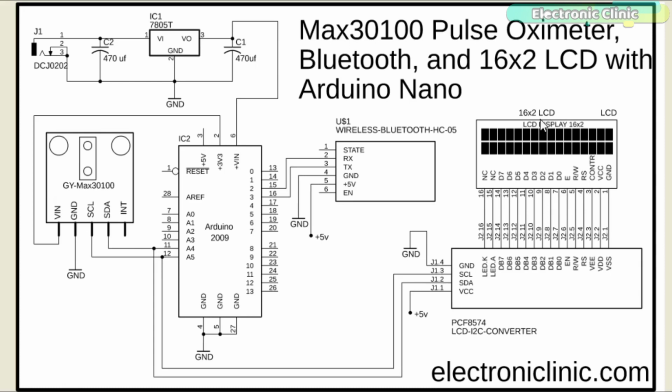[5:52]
This time, I added an I2C supported 16x2 LCD. The SDA and SCL pins of the 16x2 LCD are connected with the Arduino's analog pins A4 and A5, while the VCC and ground pins of the LCD I2C converter are connected with the 5-volt and ground. The RX and TX pins of the HC05 Bluetooth module are connected with the Arduino pins 2 and 3, while the ground and plus 5-volt pins of the Bluetooth module are connected with the ground and 5-volts of the Arduino.
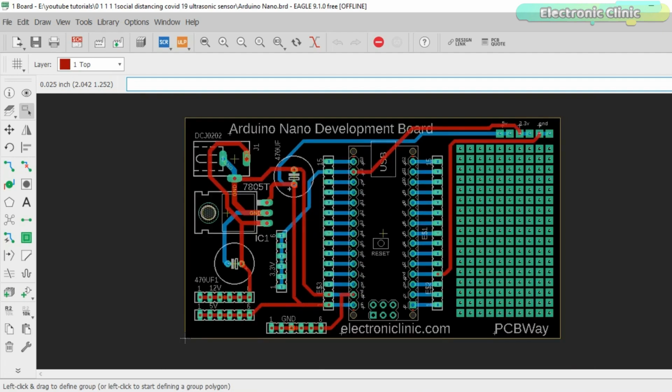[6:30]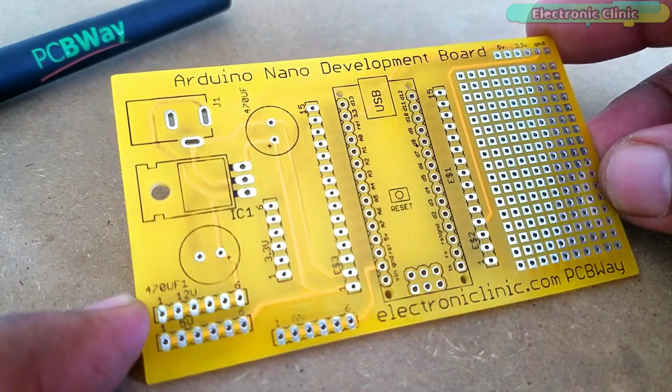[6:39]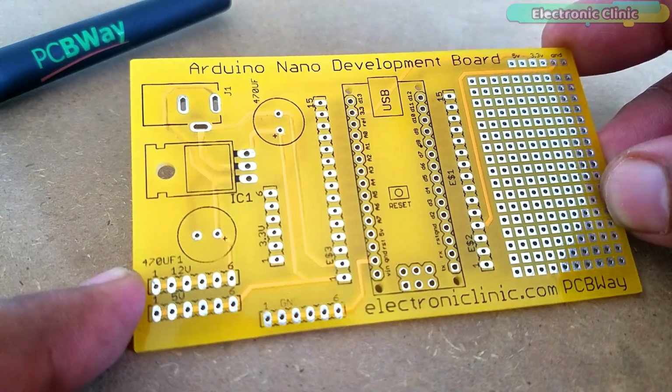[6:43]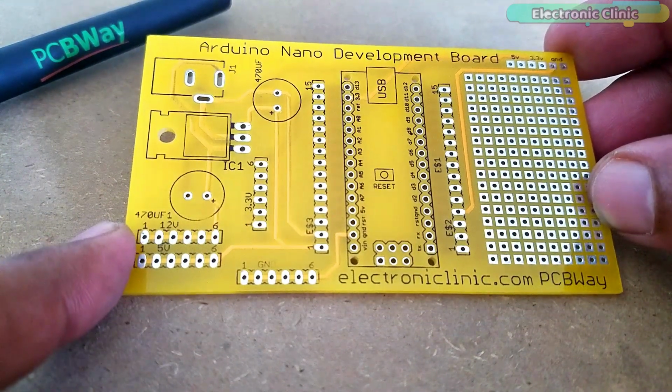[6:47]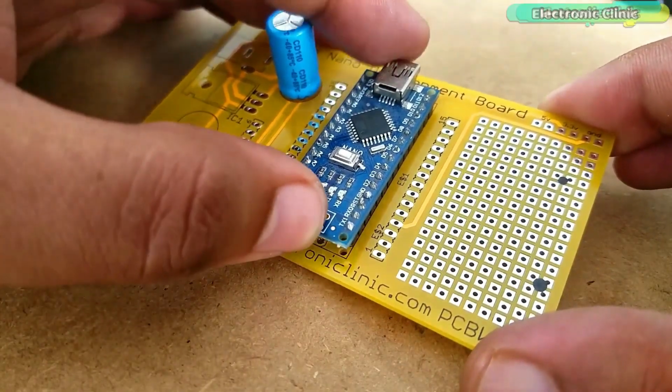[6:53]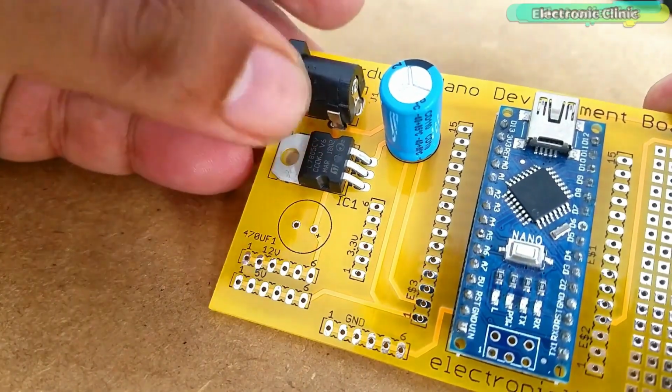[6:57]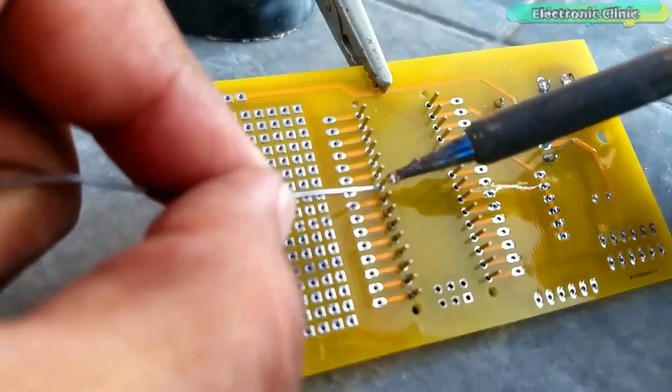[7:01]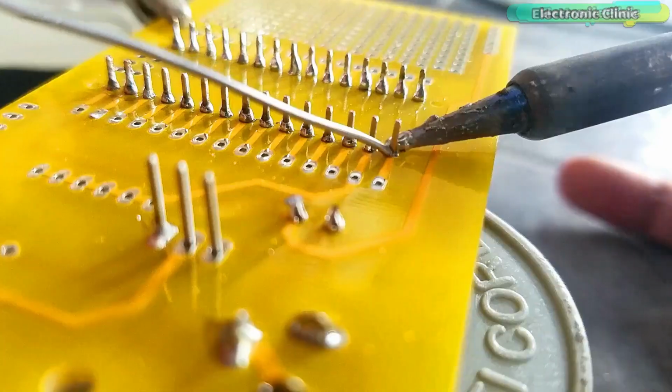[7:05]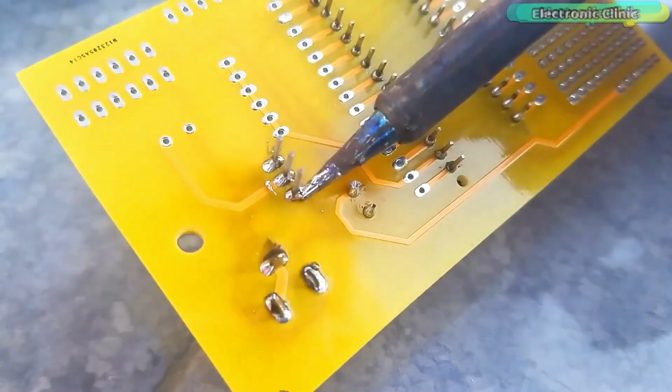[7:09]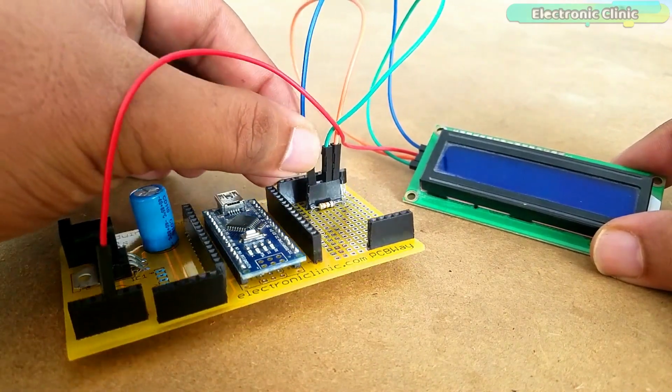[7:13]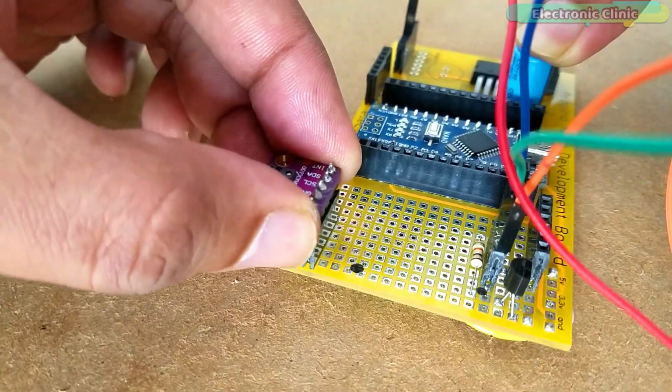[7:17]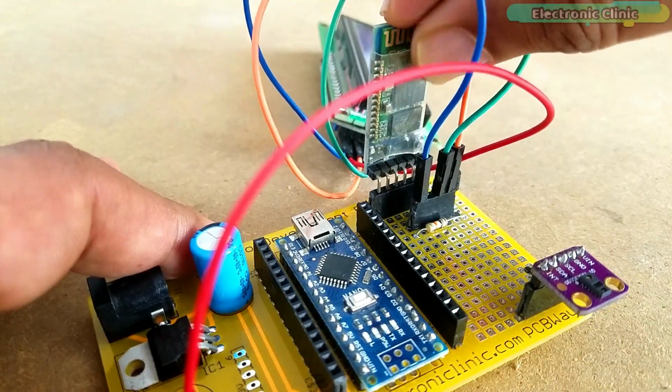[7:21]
Next, I started off by placing the components and completed the soldering job. Finally, I connected the I2C supported 16x2 LCD, Max30100 pulse oximeter and the HC05 Bluetooth module.
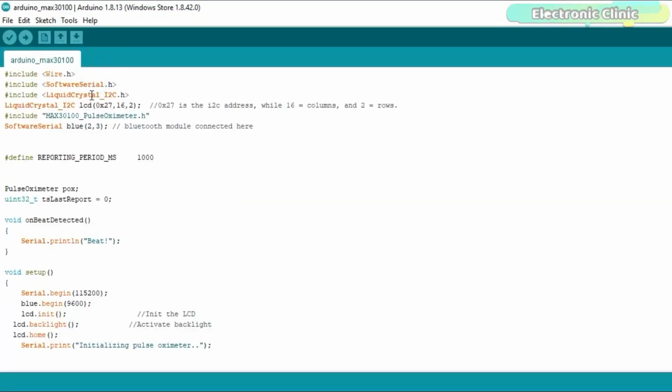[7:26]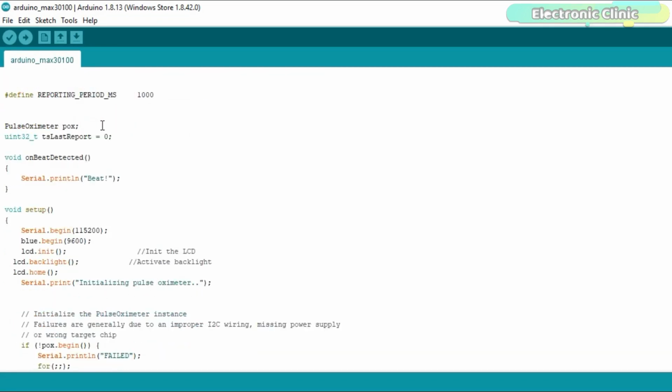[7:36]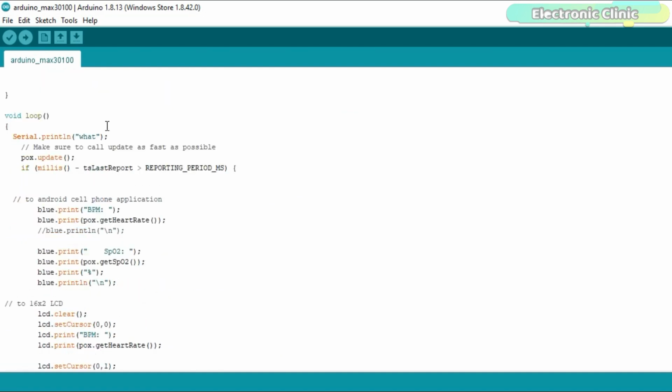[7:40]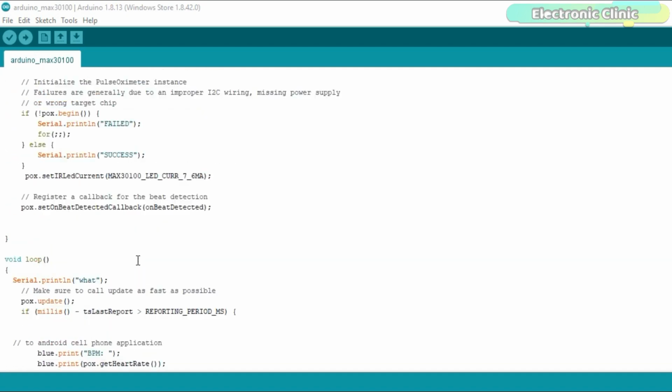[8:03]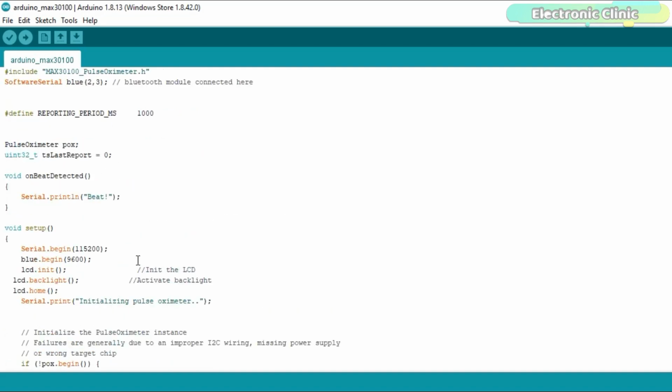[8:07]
This is the same exact program with a very little modification. I added the I2C supported liquid crystal library and defined pins as per the circuit diagram. In the loop function, I added instructions for sending the BPM and oxygen percentage values to the Android cell phone application, and also added instructions for displaying the BPM and oxygen percentage values on the I2C supported 16x2 LCD module. The circuit diagram, libraries and program can be downloaded from our website electronicclinic.com.
I have already uploaded this program. Let's watch this project in action.
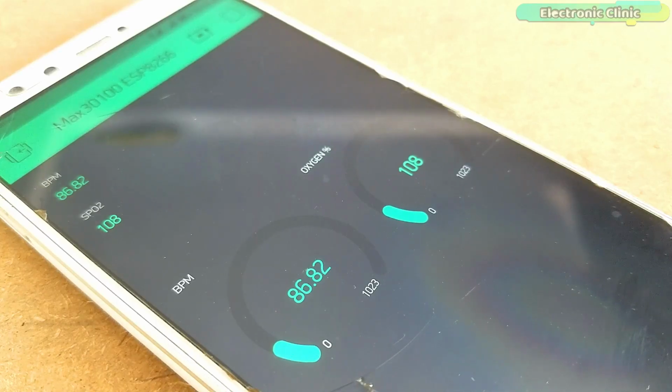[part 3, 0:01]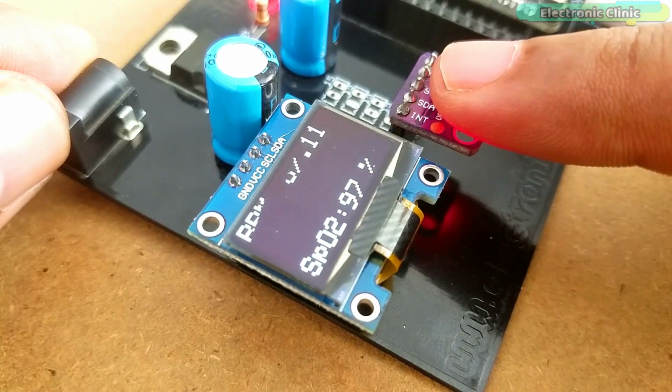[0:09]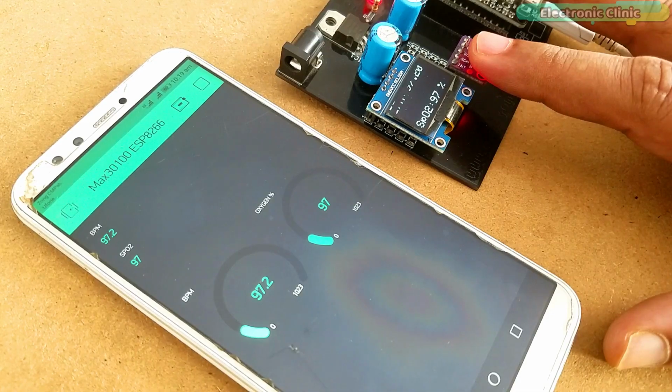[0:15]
In today's episode, you will learn how to monitor the blood oxygen and BPM values on the Blynk application and the I2C supported 128x64 OLED display module using the NodeMCU ESP8266 WiFi module and the MAX30100 pulse oximeter.
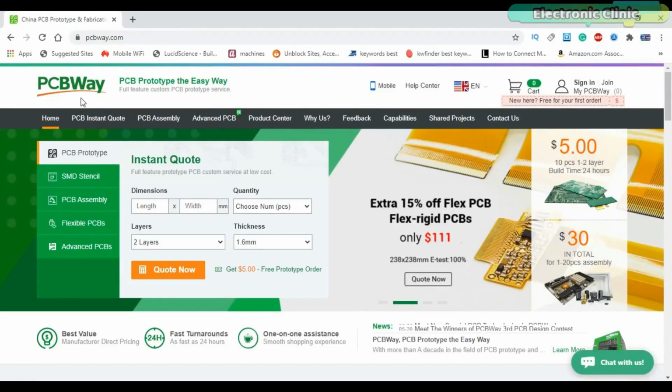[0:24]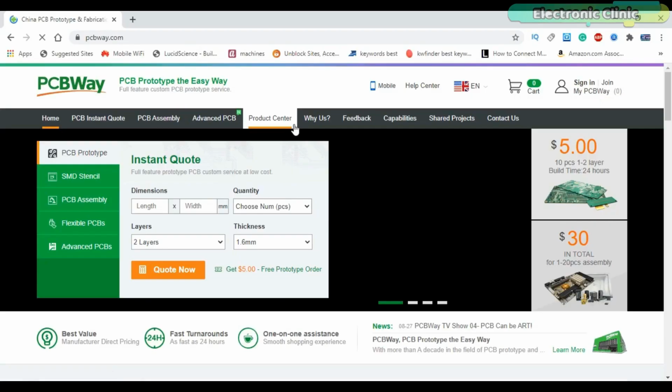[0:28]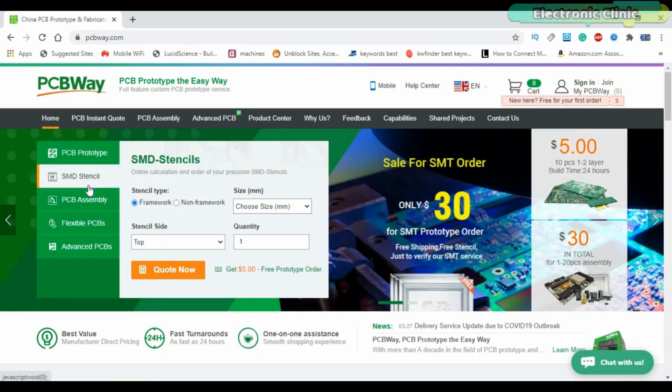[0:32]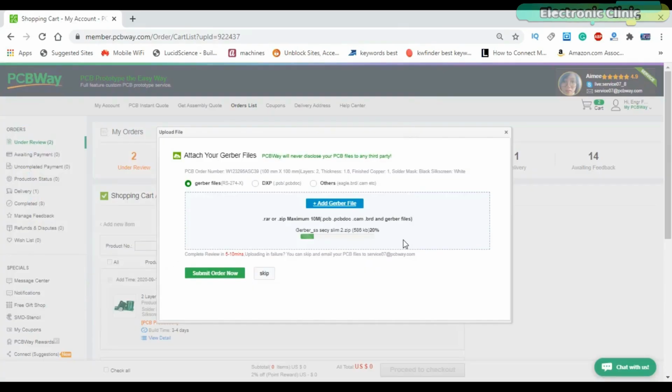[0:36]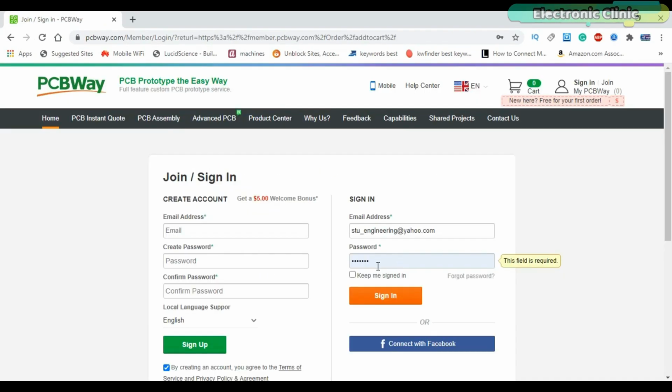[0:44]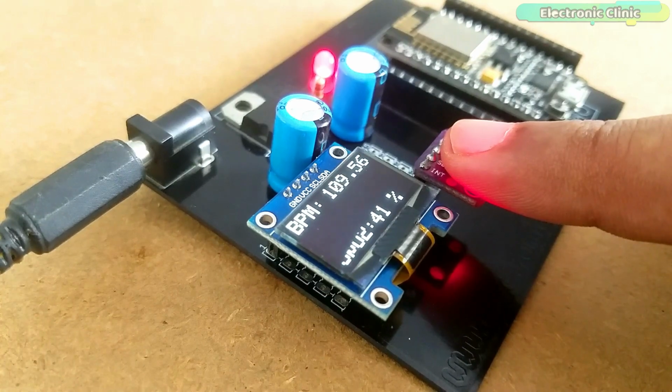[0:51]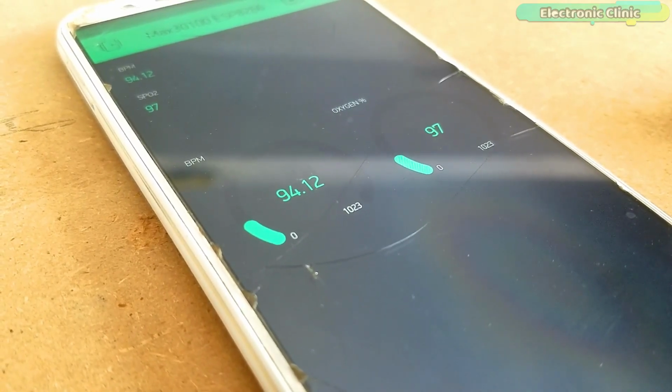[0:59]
The blood oxygen and BPM or heart rate values can be monitored in real time using the OLED display module. And the same values can also be monitored from anywhere around the world using the Blynk application.
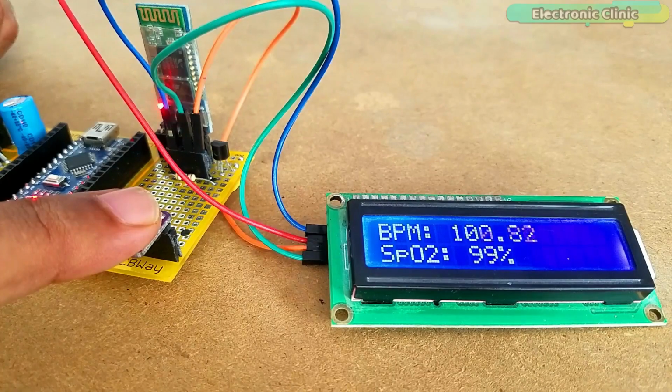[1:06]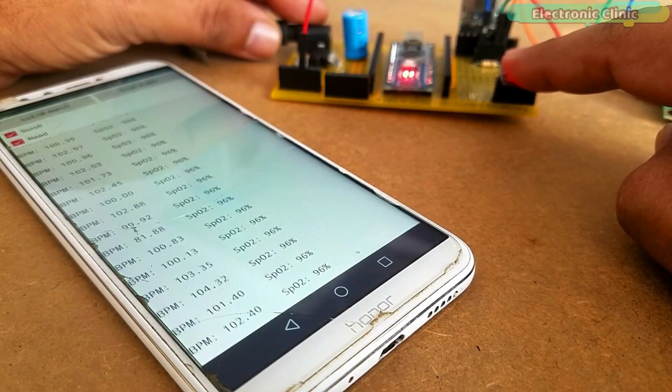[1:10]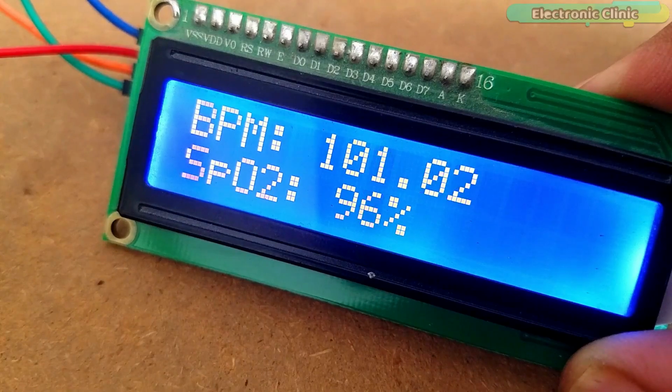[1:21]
In my previous tutorial, I monitored the blood oxygen and BPM values wirelessly using an Android application designed in Android Studio, Arduino Nano, and HC05 Bluetooth module. In that tutorial, I also displayed the values on the I2C supported 16x2 LCD.
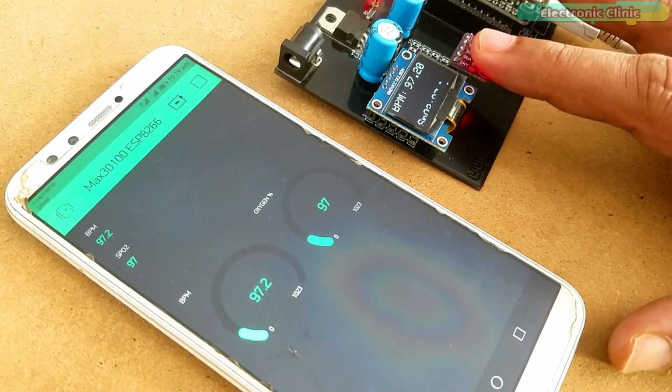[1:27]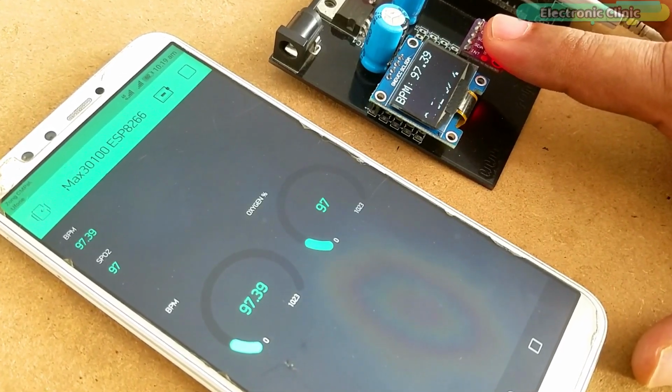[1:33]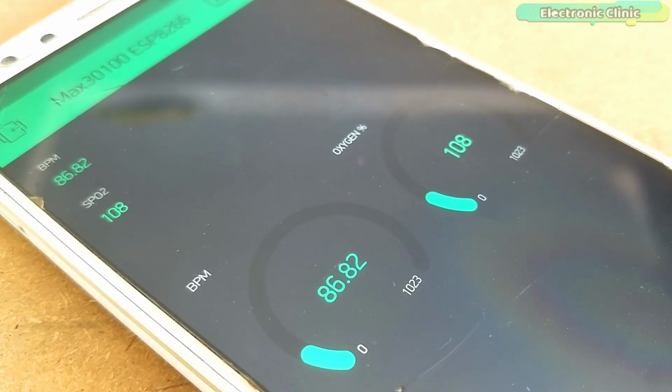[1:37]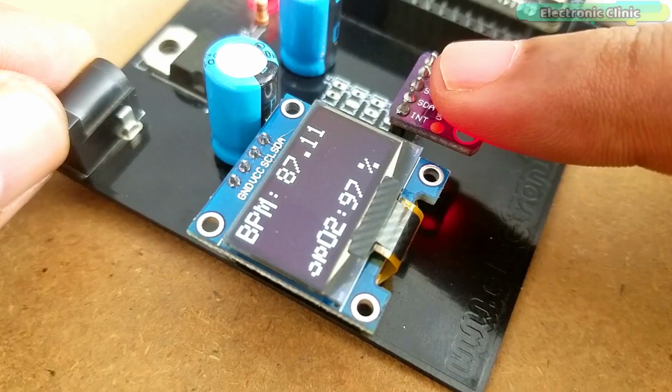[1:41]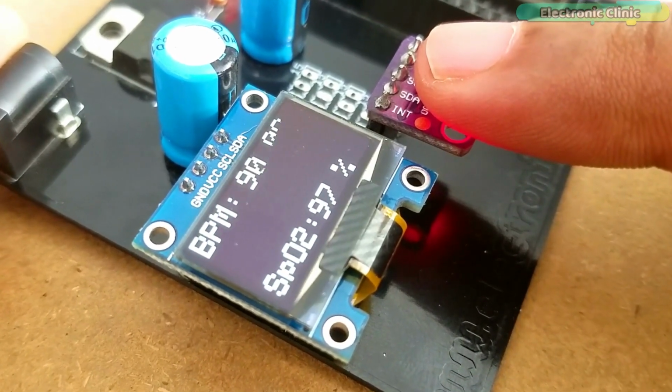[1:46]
In today's tutorial, we will cover number 1, modified circuit diagram explanation, number 2, MAX30100 NodeMCU ESP8266 programming, number 3, Blynk application designing, number 4, soldering, and finally number 5, testing. Without any further delay, let's get started.
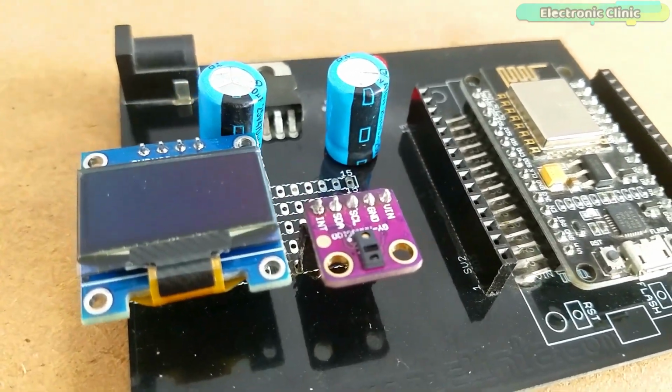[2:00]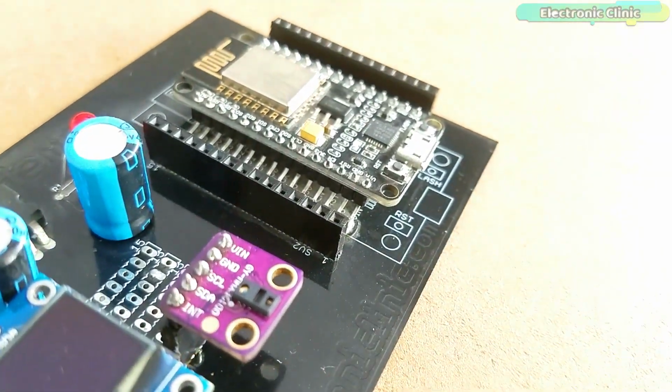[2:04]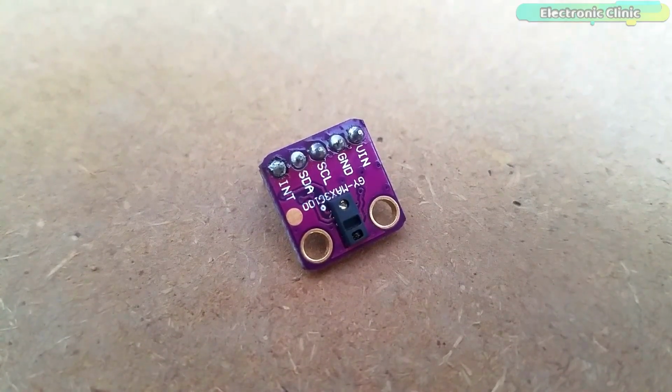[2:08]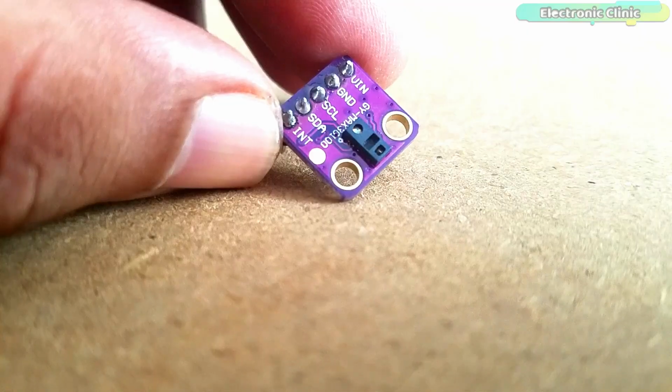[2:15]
This is the MAX30100 pulse oximeter used for monitoring the blood oxygen and BPM. I have already explained the very basics in my previous tutorials. I will provide links in the description.
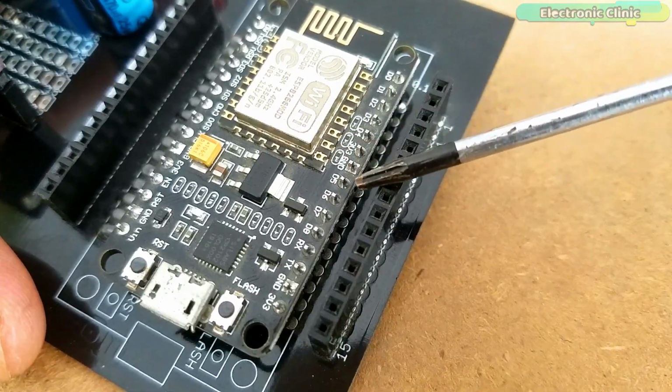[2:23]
I have been using the NodeMCU ESP8266 WiFi module for quite a long time. In different IoT based projects, I have already covered the extreme basics, including the NodeMCU ESP8266 board manager installation, Blynk library downloading, and so many other things. I'll provide links to all the related tutorials in the description.
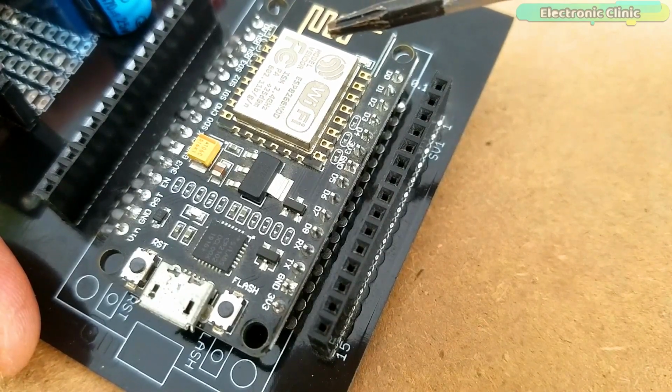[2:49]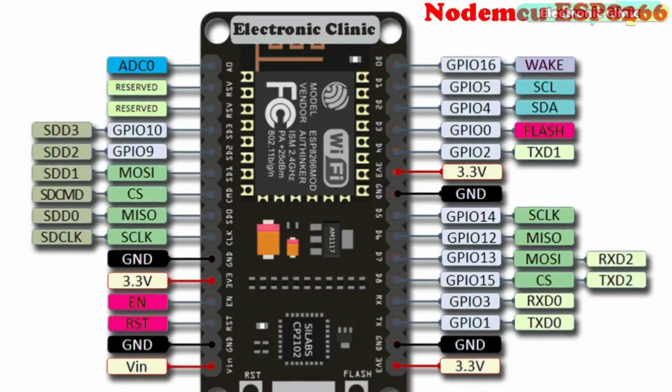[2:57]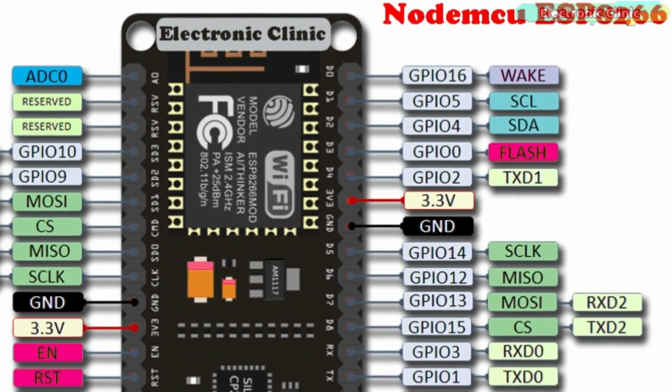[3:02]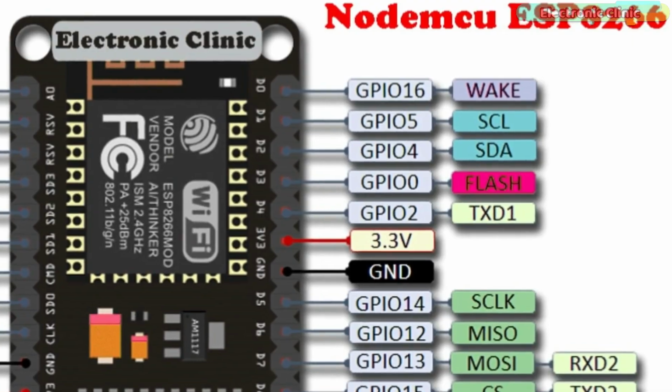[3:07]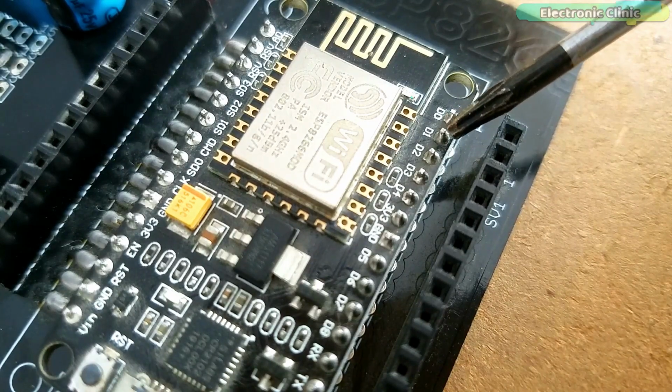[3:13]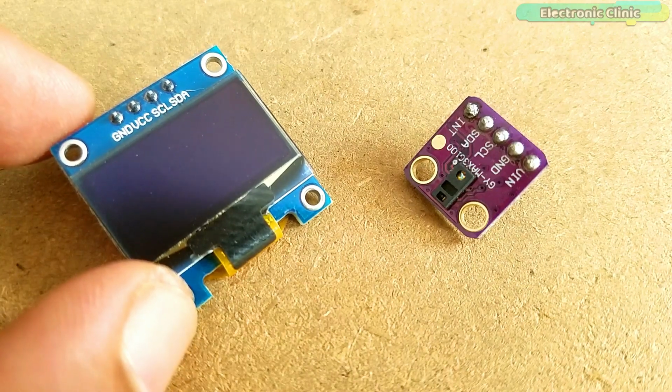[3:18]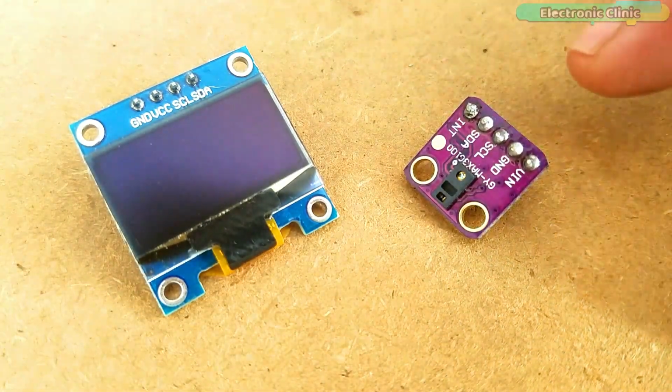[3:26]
Just like the Arduino Uno, NodeMCU ESP8266 can also be used to communicate with the I2C supported devices. If you look at the pinout of the NodeMCU ESP8266, you will find D1 is the SCL and D2 is the SDA. So using these two pins, multiple I2C supported devices can be connected with the NodeMCU ESP8266. In this project, we are using two I2C supported devices, the OLED display module and the MAX30100 pulse oximeter.
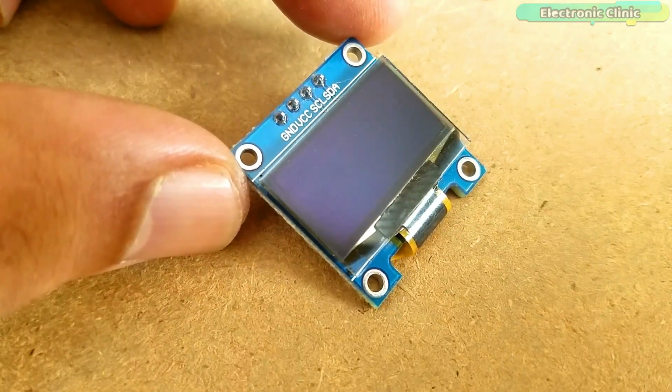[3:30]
This is the I2C supported 128x64 OLED display module that we will use for displaying the blood oxygen and BPM values. For more details, watch my getting started tutorial on the OLED display modules.
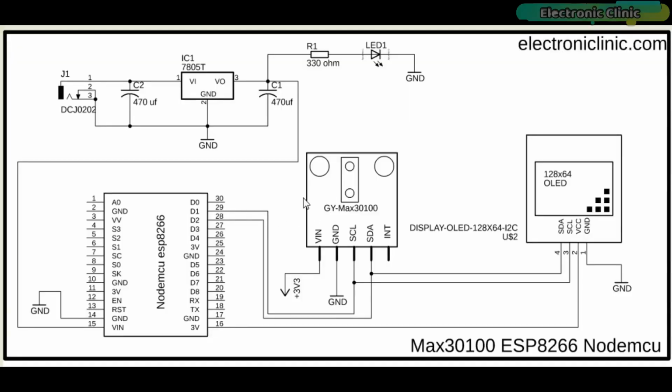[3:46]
The circuit diagram, as you can see, is very simple. There is nothing complicated. A 5-volt regulated power supply based on the LM7805 voltage regulator is used to power up the NodeMCU ESP8266 WiFi module.
D1 and D2 pins of the NodeMCU module, which are the SCL and SDA pins, are connected with the SCL and SDA pins of the MAX30100 and OLED display module, while the voltage and ground pins of both the modules are connected with the 3.3 volt and ground pins of the NodeMCU ESP8266 WiFi module.
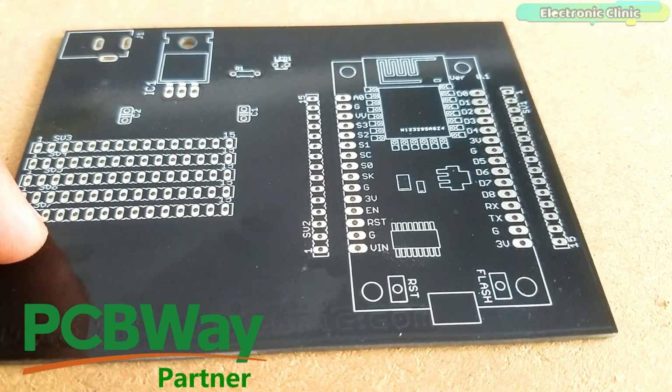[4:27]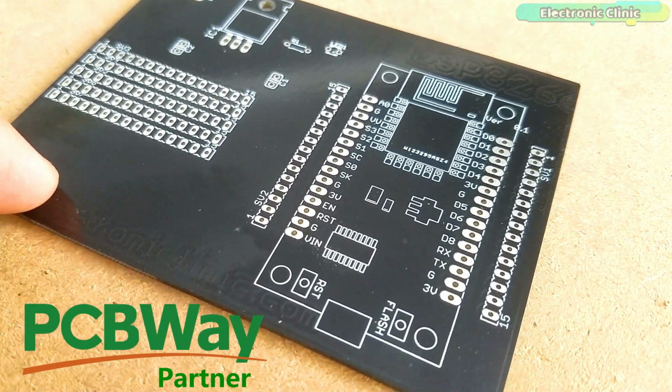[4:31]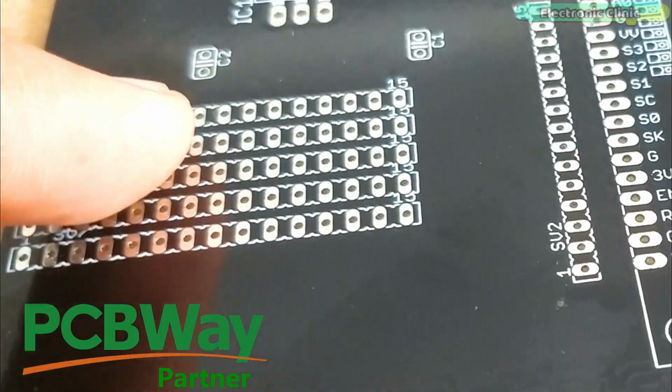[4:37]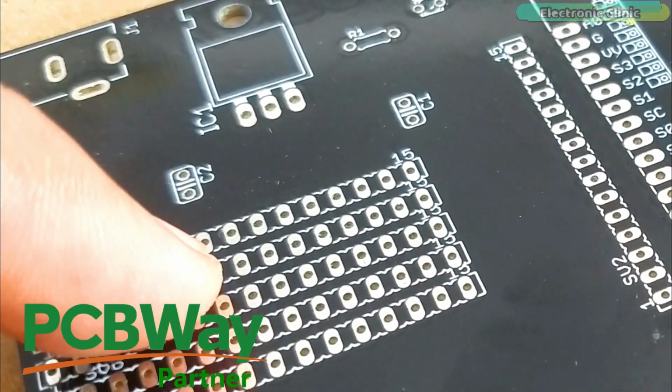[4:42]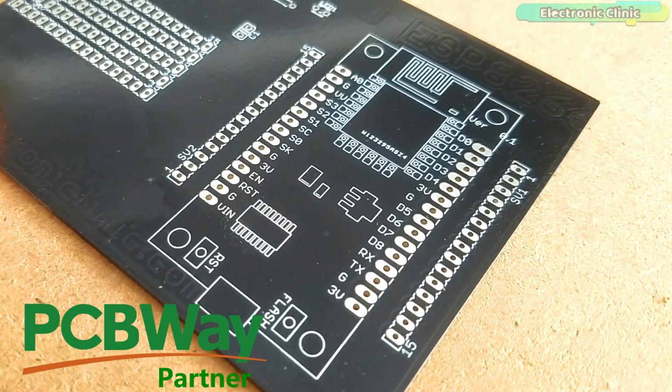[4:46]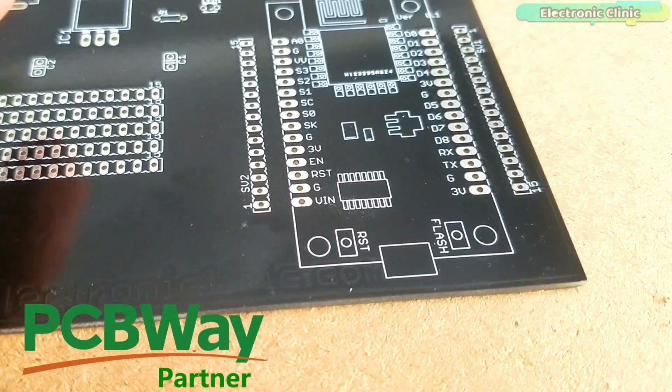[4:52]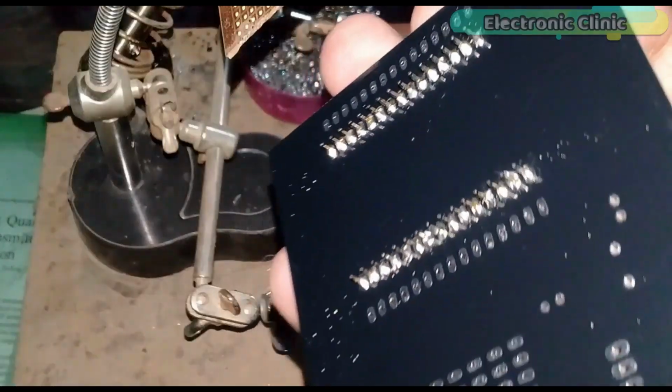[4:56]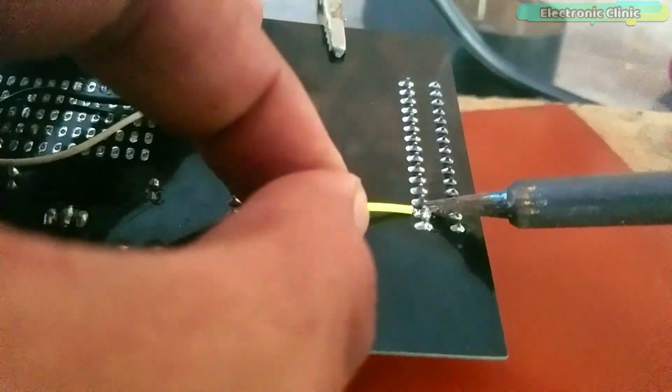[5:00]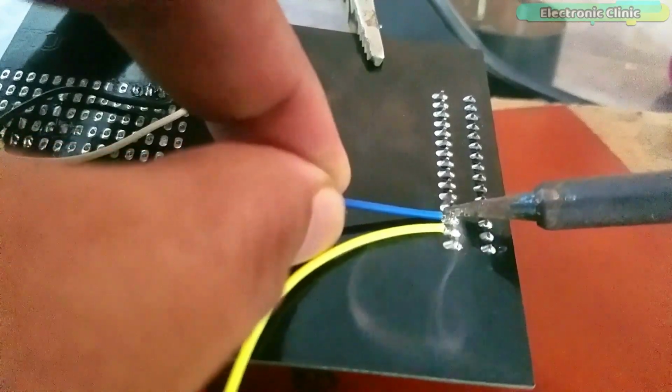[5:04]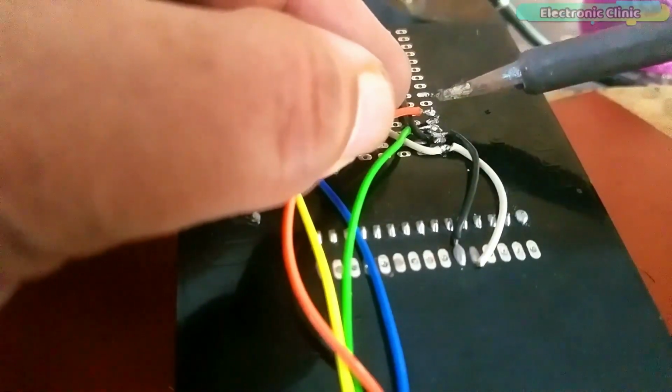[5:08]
I completed the soldering job as per the circuit diagram already explained. Make sure there is no short circuit between the SCL and SDA pins while soldering the wires for the OLED display module and the MAX30100.
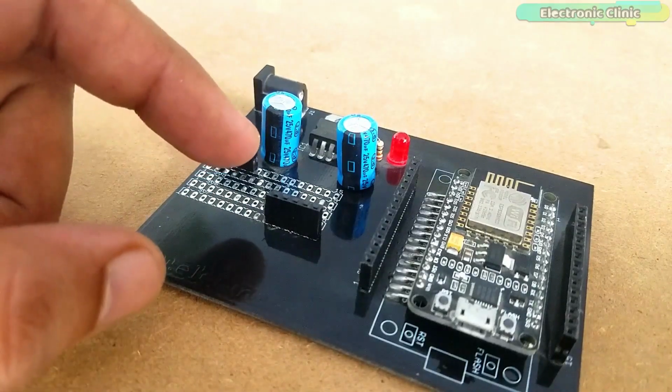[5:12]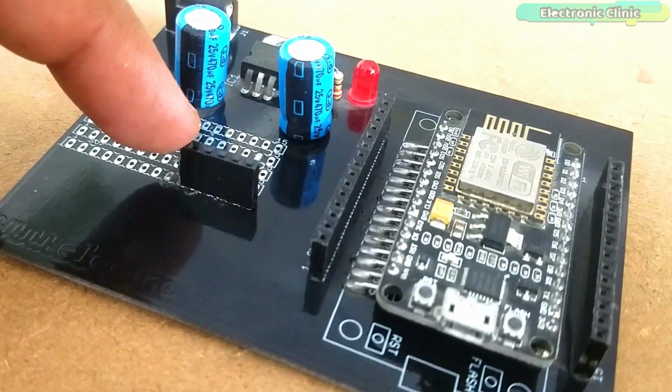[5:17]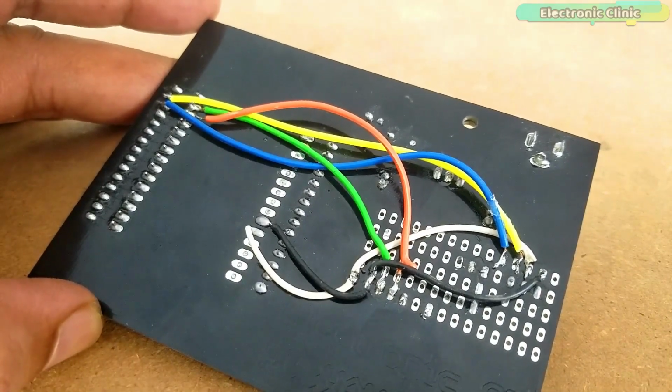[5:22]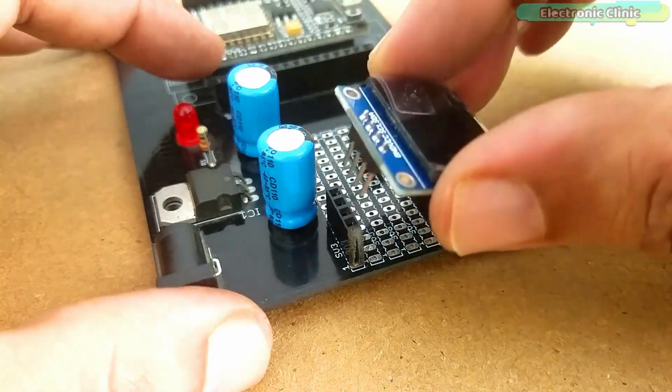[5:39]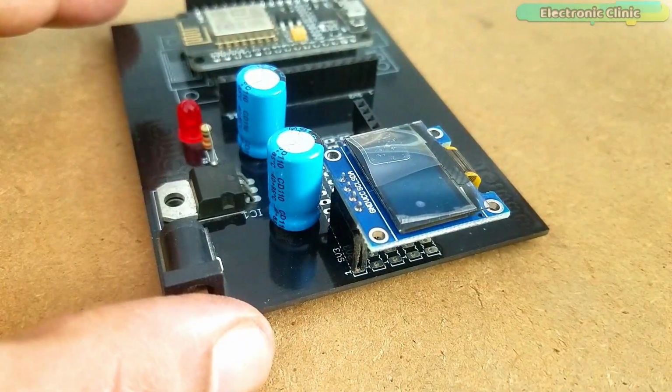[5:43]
These are the female headers I added for the OLED display module and the MAX30100 pulse oximeter. These are the wires I used to connect the SCL and SDA pins of the MAX30100 and OLED display module. The white and black wires are the 3.3 volt and ground connected with the power supply pins of both the modules. Finally, I started off by adding the OLED display module and the MAX30100 pulse oximeter.
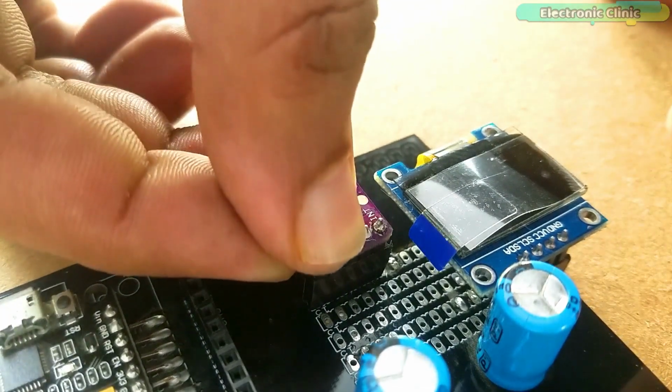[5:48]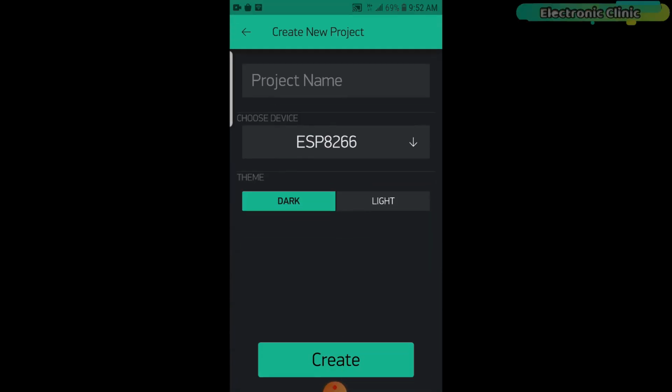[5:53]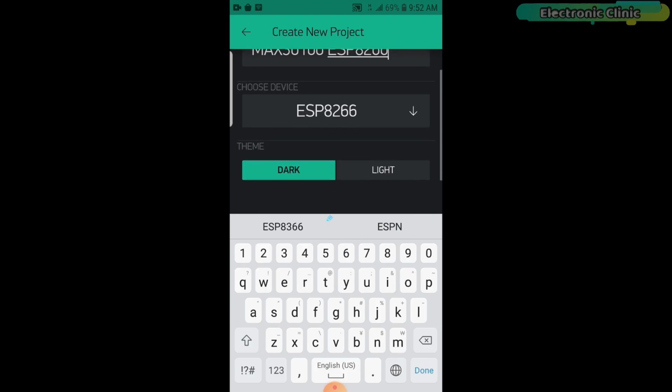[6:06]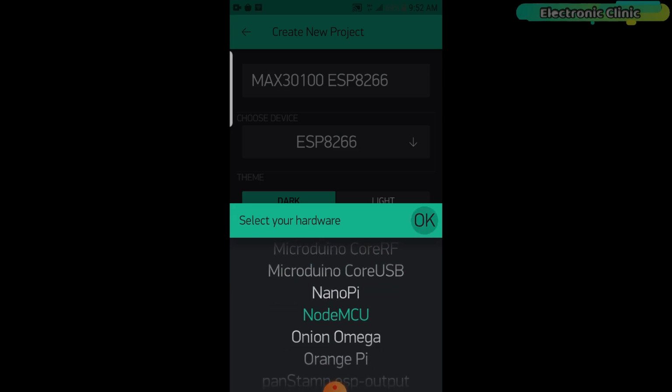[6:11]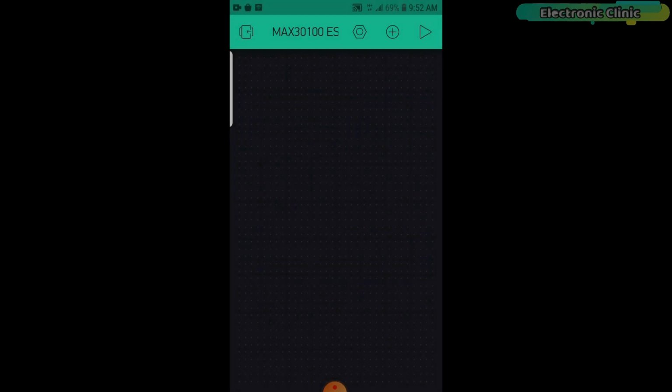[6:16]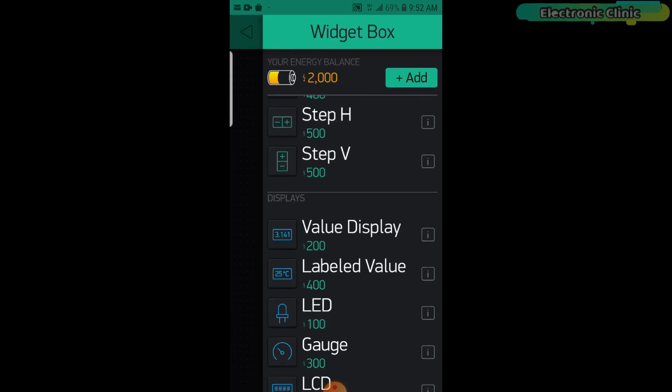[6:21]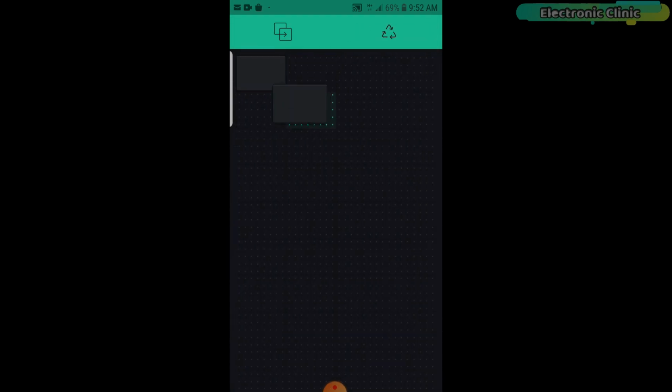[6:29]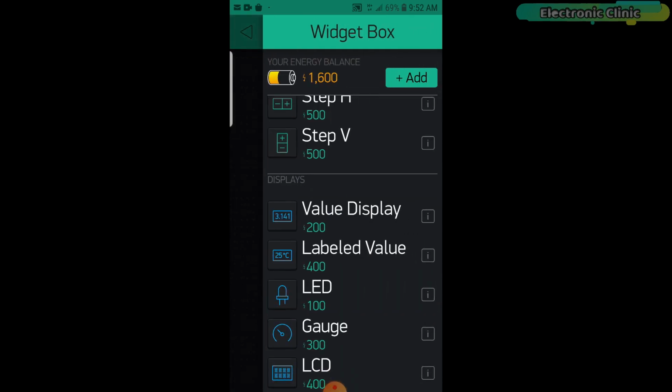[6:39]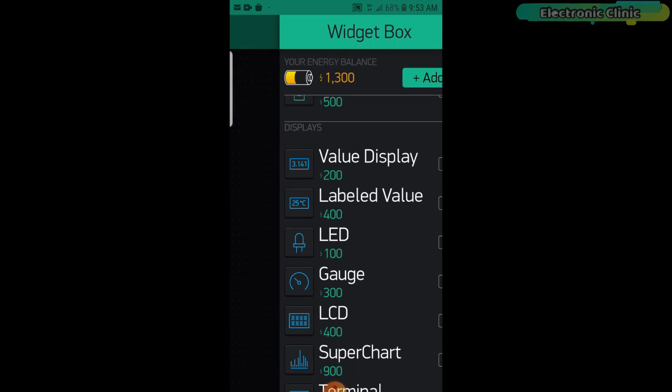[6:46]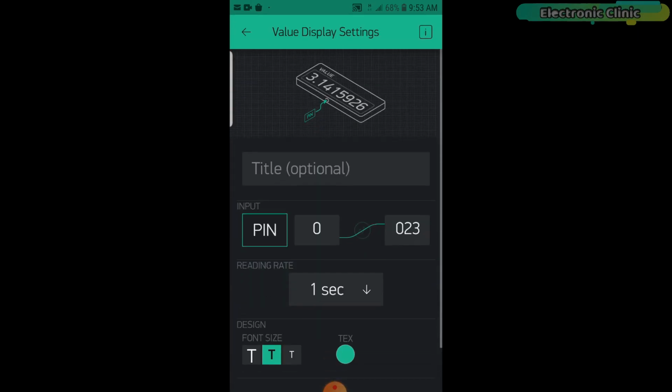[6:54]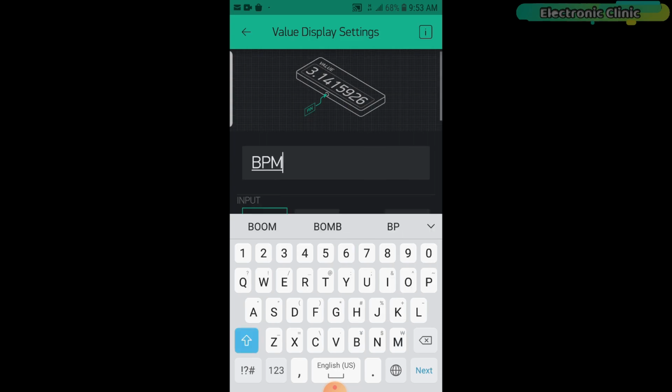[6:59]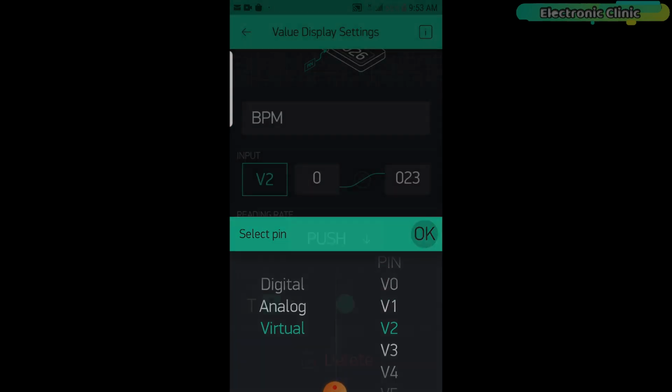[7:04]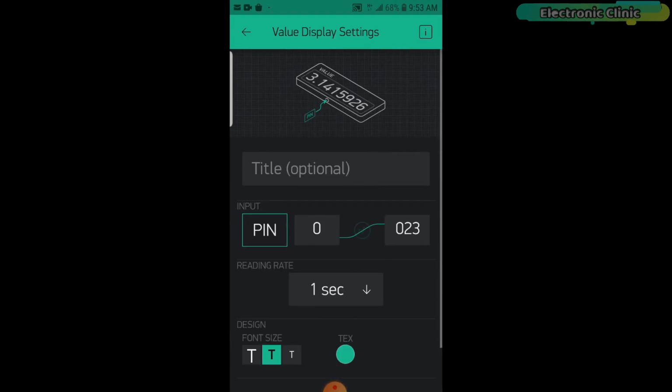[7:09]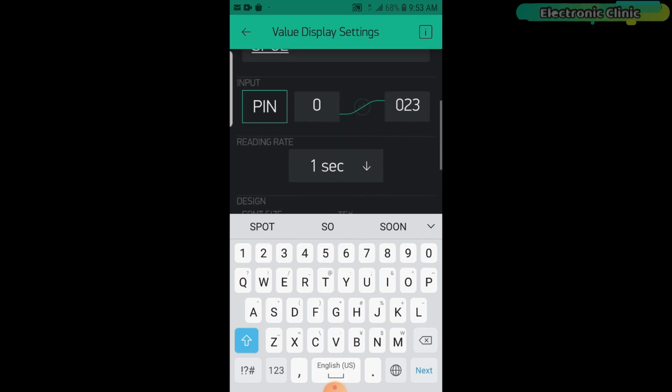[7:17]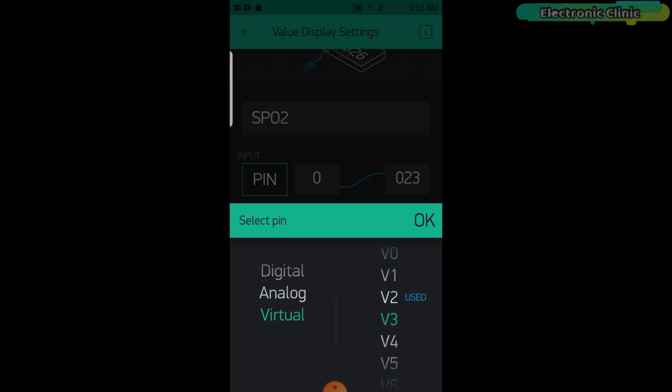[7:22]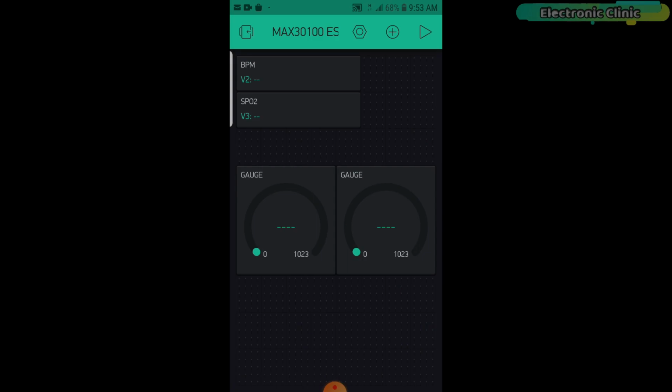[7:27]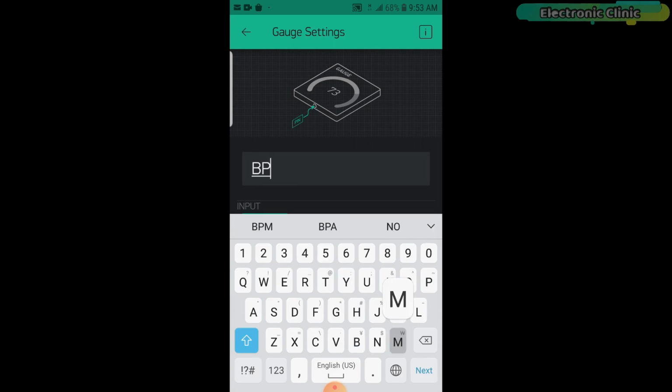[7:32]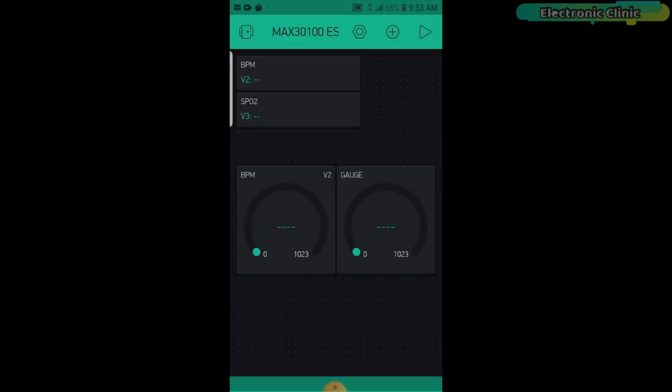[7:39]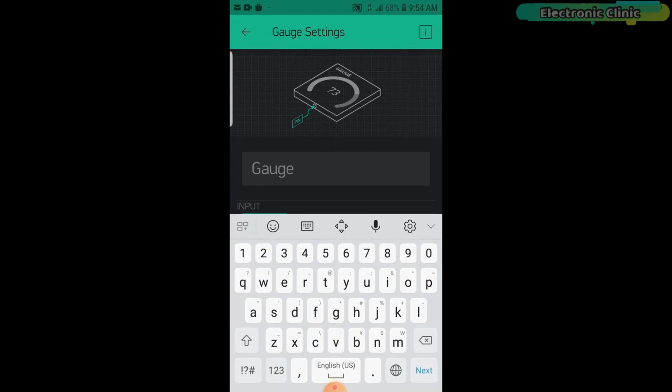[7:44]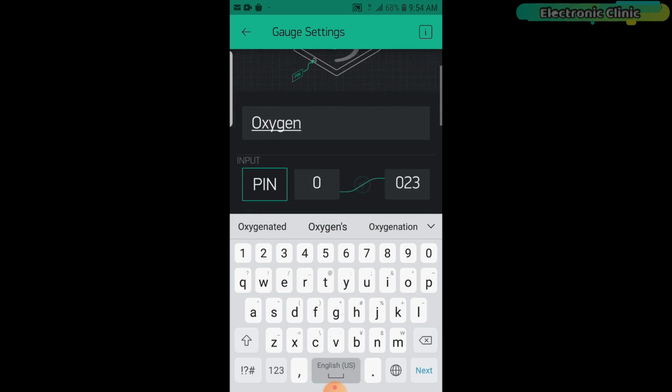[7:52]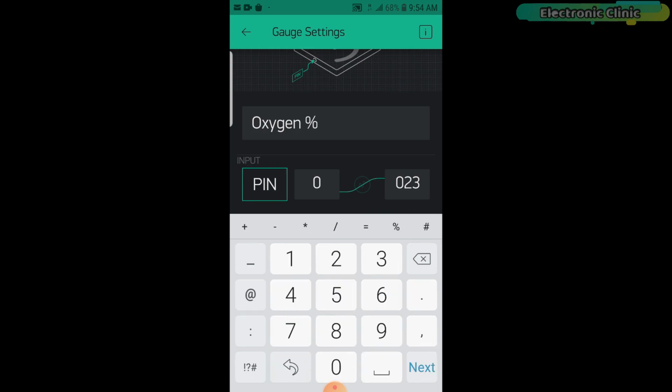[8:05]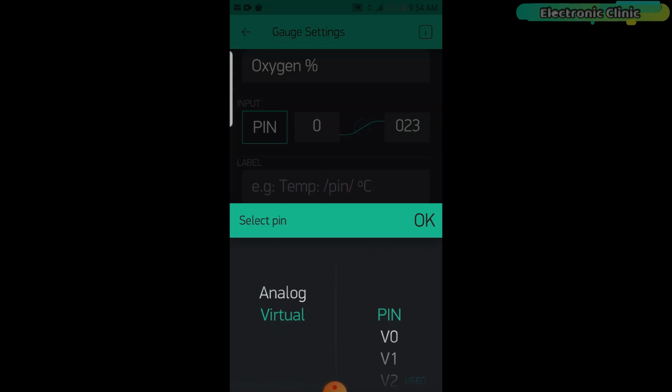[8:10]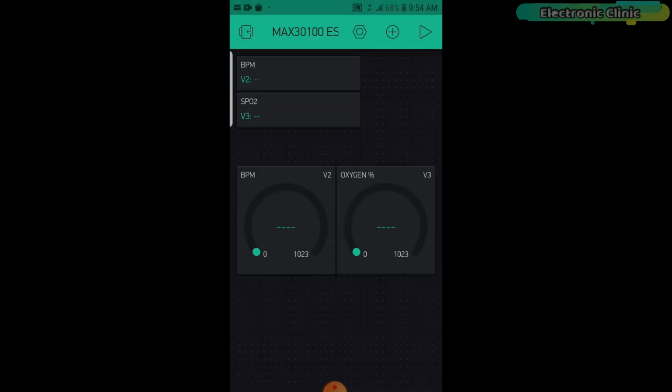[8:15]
Now let's make the Blynk application, follow the same exact steps. Our application is ready. Now let's take a look at the programming.
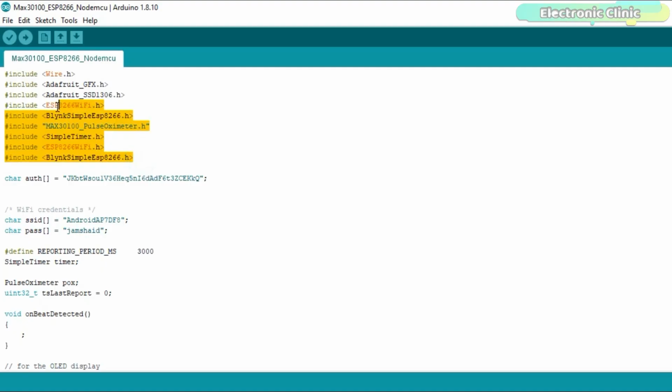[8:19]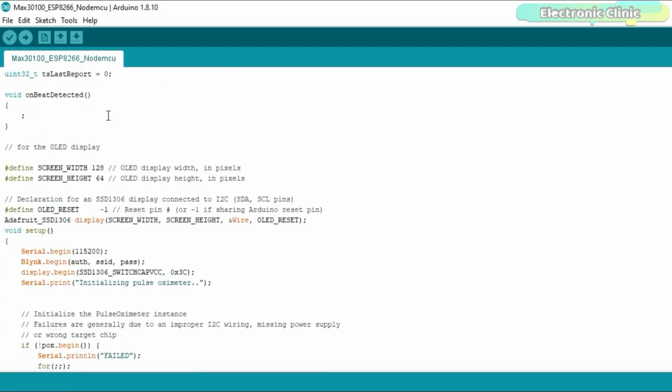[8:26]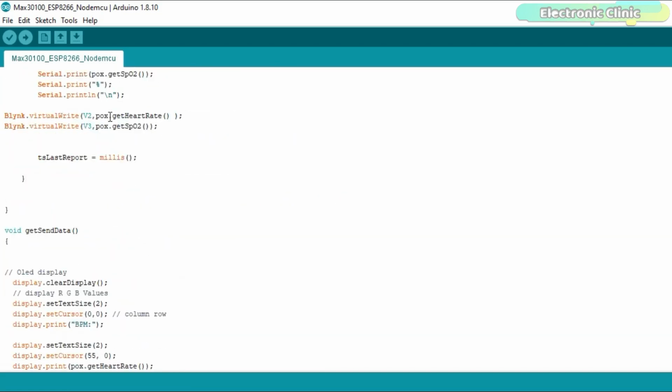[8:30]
As usual, before you start the programming, first of all, make sure you download all the necessary libraries from our website electronicclinic.com. The MAX30100 pulse oximeter code remains the same as I explained in my previous tutorial.
This time I added code for the NodeMCU module so that I can send the BPM and oxygen values to the Blynk application. I also added code for the OLED display module. For more detailed explanation, read my article available on electronicclinic.com.
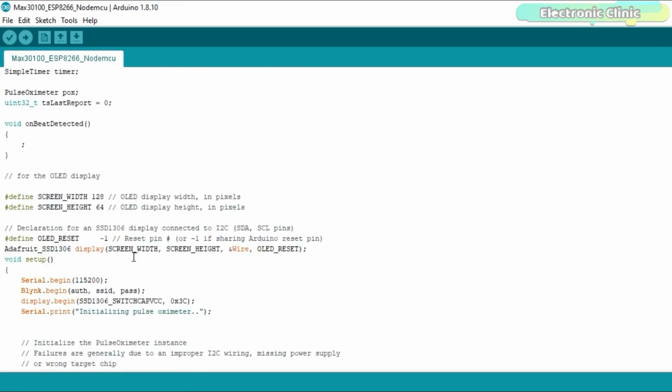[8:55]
I have already uploaded this program. Let's watch this project in action.